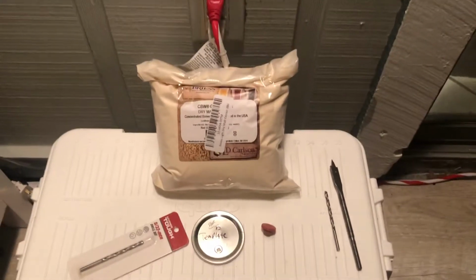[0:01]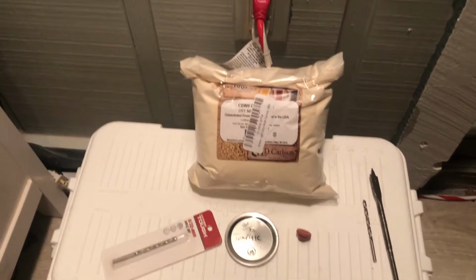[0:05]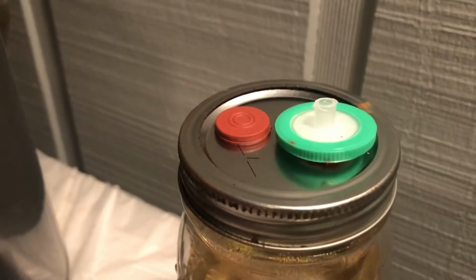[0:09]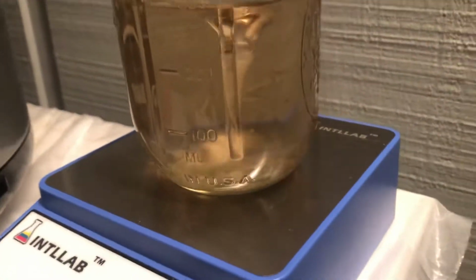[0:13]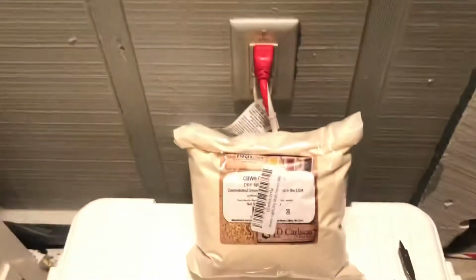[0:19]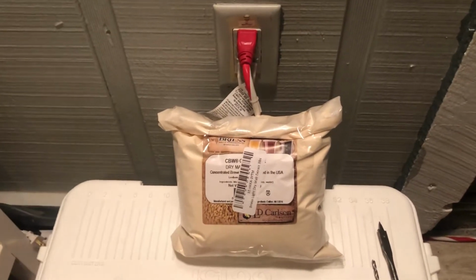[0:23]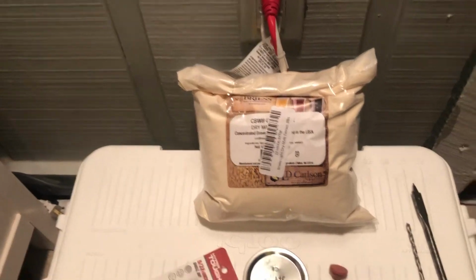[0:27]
How's everybody doing today? Just want to talk a little bit about how to make the lids for these jars, and then also what I use for my solution, so that I can grow some mycelium in it. I'm going to expand my cultures, so I don't have to keep paying the big bucks. Granted, I'm still going to, because I want more and more different types of cultures, but I'm taking this up as part of my hobby because I really enjoy this part.
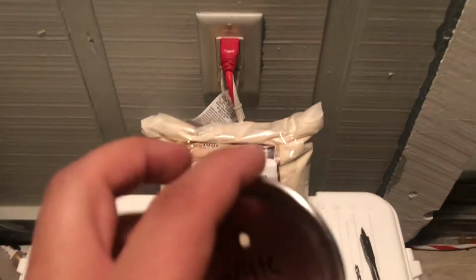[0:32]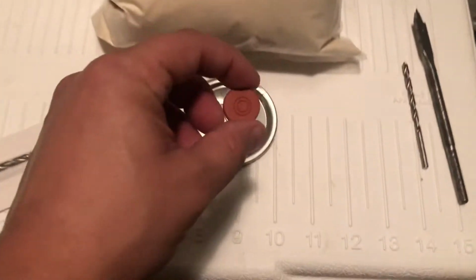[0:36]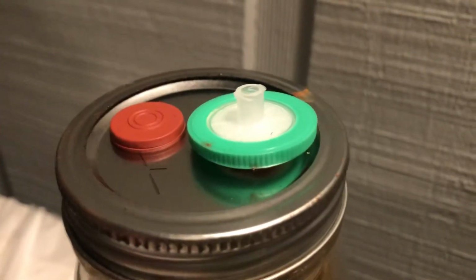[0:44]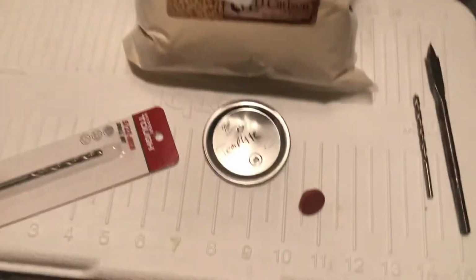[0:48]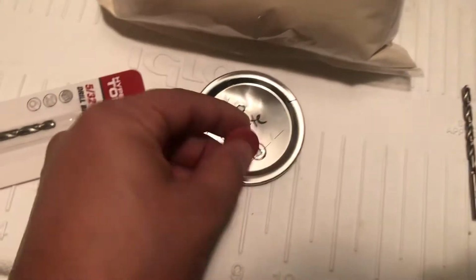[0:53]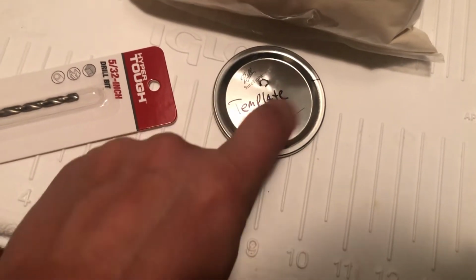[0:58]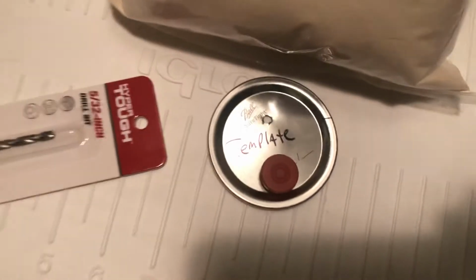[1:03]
So first of all, take a regular lid. You got to line up your injection port to where you want to have it, and your syringe filter, which I don't have any more left because I just made 24 jars. So you just have to place them to where you think they're gonna fit nicely and not overlap each other or overlap the rim of the screw down part of the jar, so that it makes a nice tight seal.
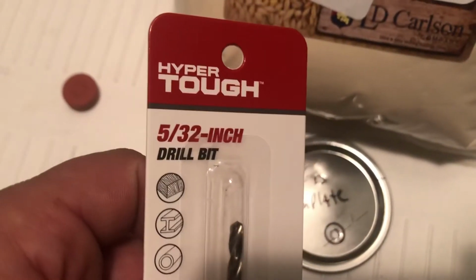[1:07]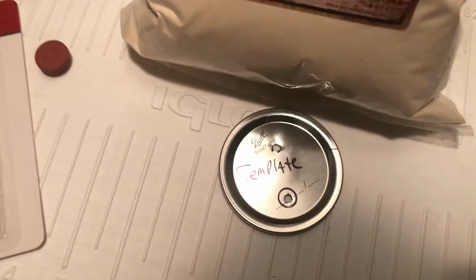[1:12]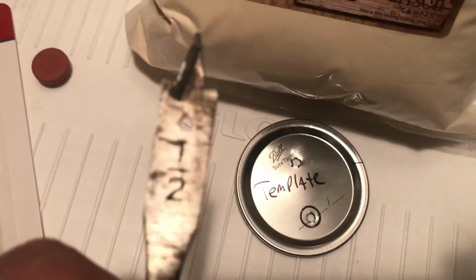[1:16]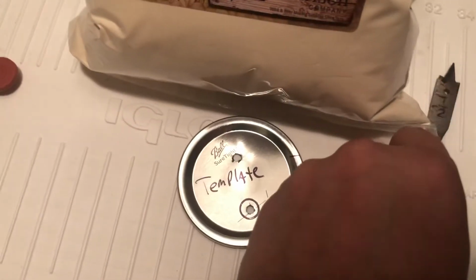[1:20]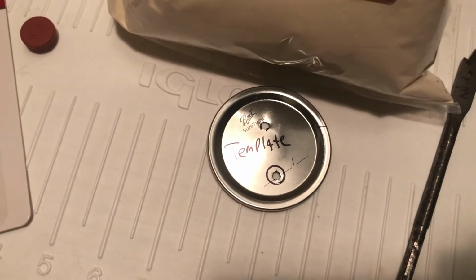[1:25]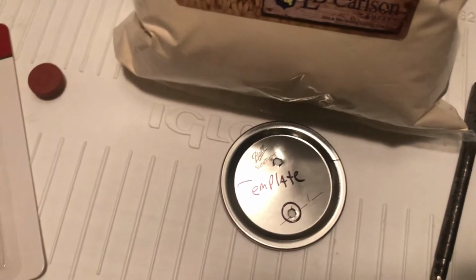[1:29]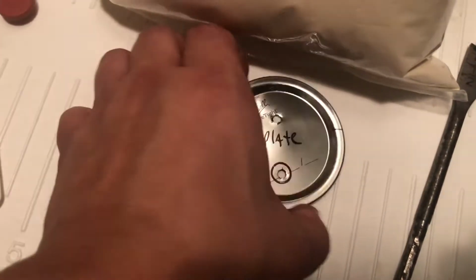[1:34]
So anyways, I used a 5/32 drill bit, which was suggested by the forum, and then I actually changed it up. I used a 1/2 inch wood bit to make my circle, and it turned out awesome. Like no major burrs or anything, so it just cut through it like a mill, which was really good. So once I did that, I deburred both holes. This one is just my template, so I don't have to do it again.
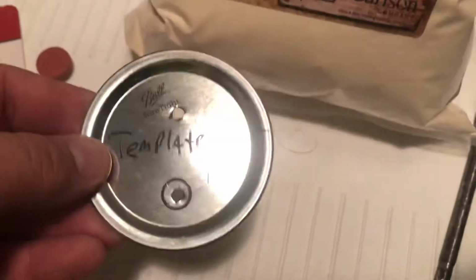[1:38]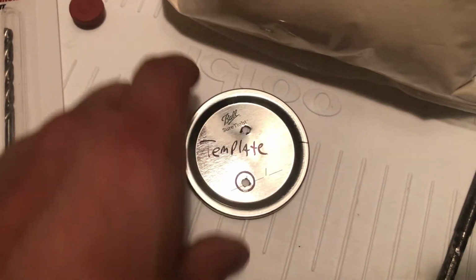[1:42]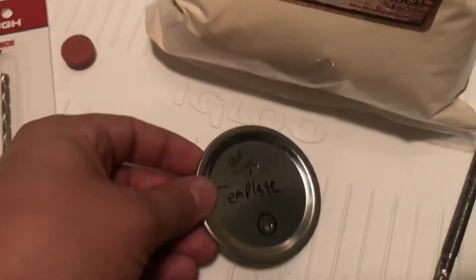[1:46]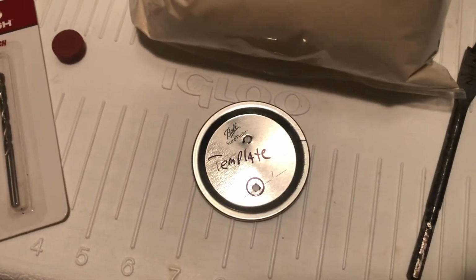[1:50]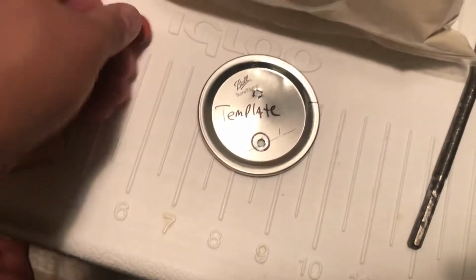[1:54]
So I just set this down on top. I know which one's the big circle, I circled it, and which one's a small circle, so it'll be easy to punch through and just make a dozen more. And I think it took me like a half hour to make a dozen. So yeah, and then fit this into your big hole, and then I put silicone around
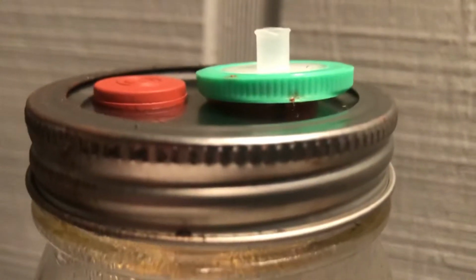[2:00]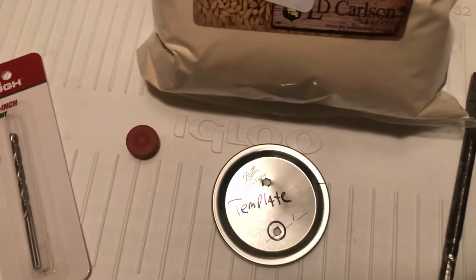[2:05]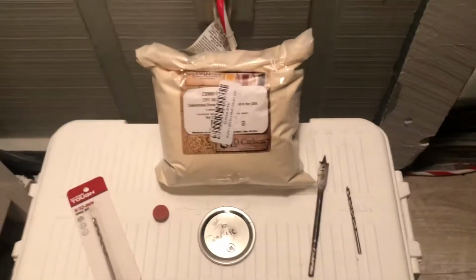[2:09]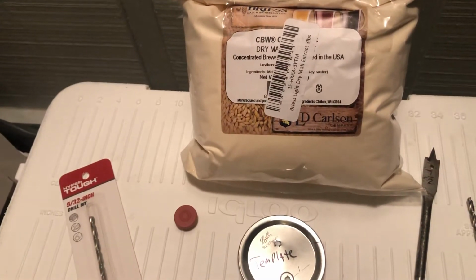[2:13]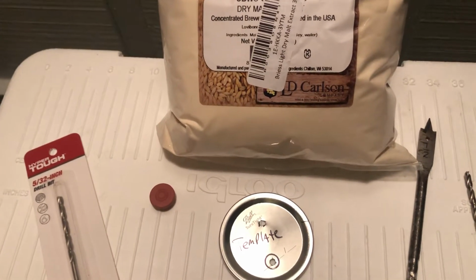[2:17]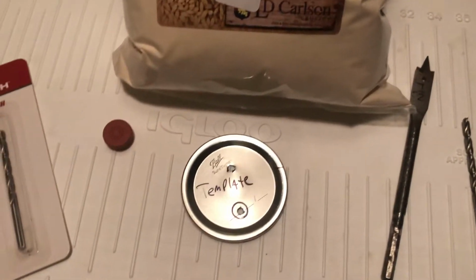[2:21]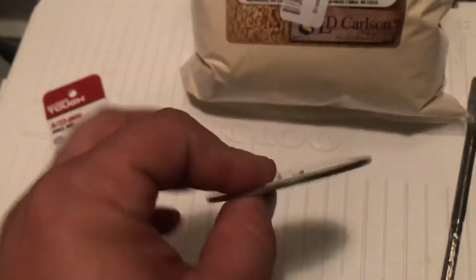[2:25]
the undercarriage of the filter right there, because it's a tight fit, but it's plastic and it doesn't form to the hole great. It does go in tight at once, but I don't want it to fall out, so that just helps it stay sealed and stay where it doesn't fall out. So less contamination would be great. So that's how I made the lids. Didn't take very long, didn't cost very much.
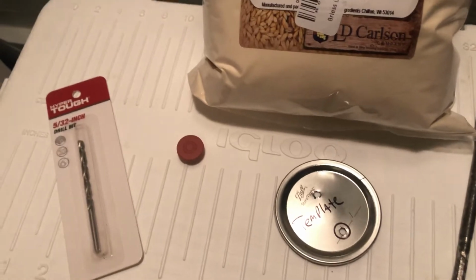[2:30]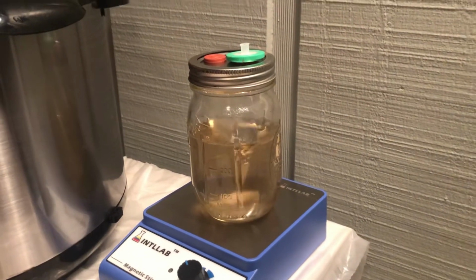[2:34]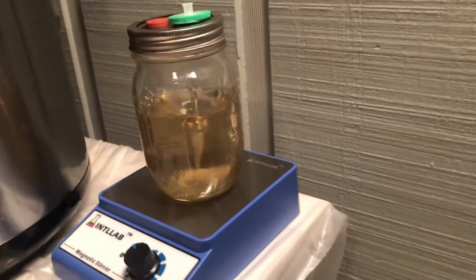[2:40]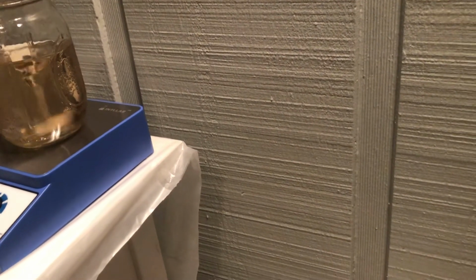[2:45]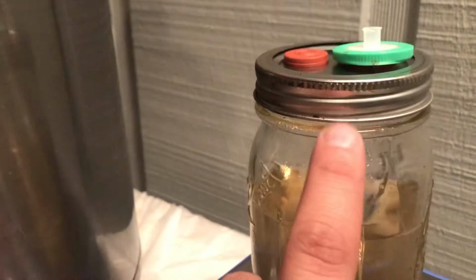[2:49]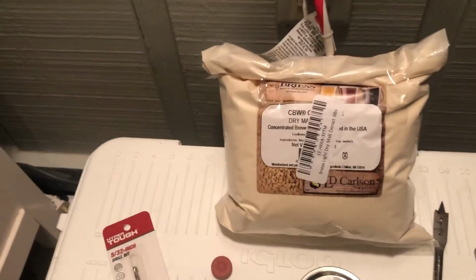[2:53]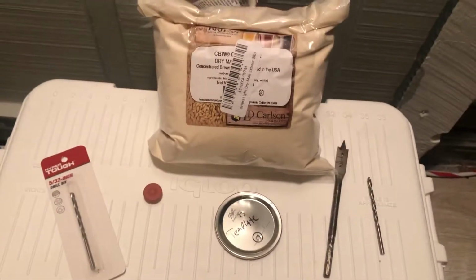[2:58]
You can actually make the lids without having jars, but I actually left the lids on the jars while I was drilling, and all 12 jars I left in the box while I was doing it, so that there was no movement, and I made sure I tightened down the lid so the inner lid didn't spin, which is the inner lid is this part, from the rim. The rim, it would actually spin and try to spin off. And we don't want to damage the seal on the inside right away. So anyway, that's how I made the lids.
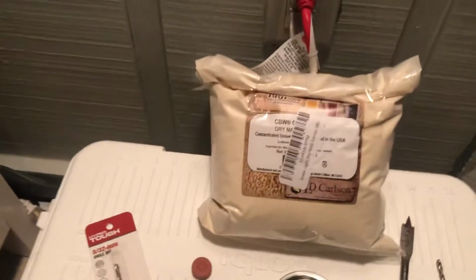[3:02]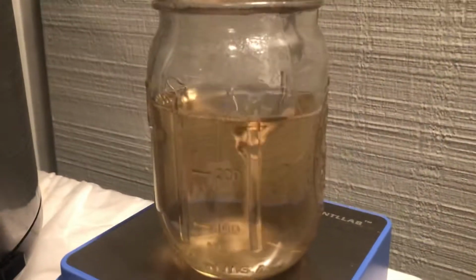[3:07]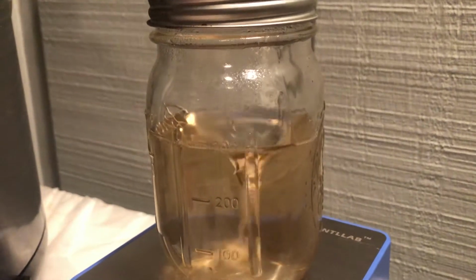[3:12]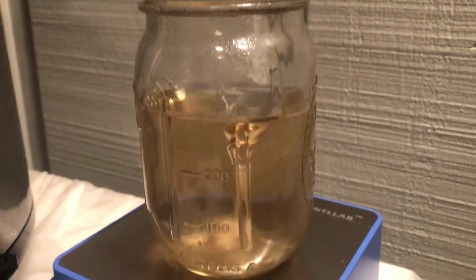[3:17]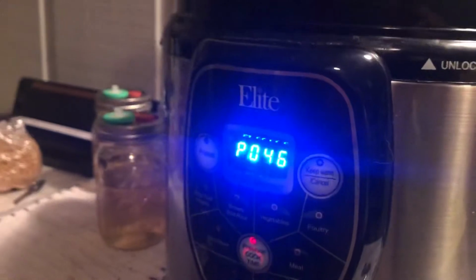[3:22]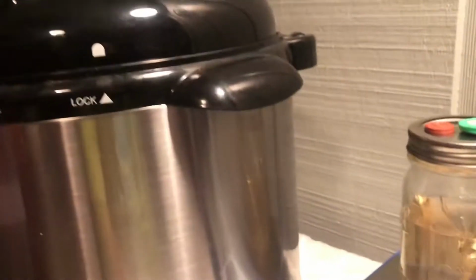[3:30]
Here is how I made the liquid. So as you can see, I got a nice little color. This one's already been pressurized 90 minutes at like 12 to 15 psi, but then I think it's sat at pressure for at least an hour more, with the system going off. So this one right here, I'm currently using the Lite pressurizer. Seems to do okay, but we'll see. We're trying everything out, so I'm also probably giving out some free syringes when I'm done here.
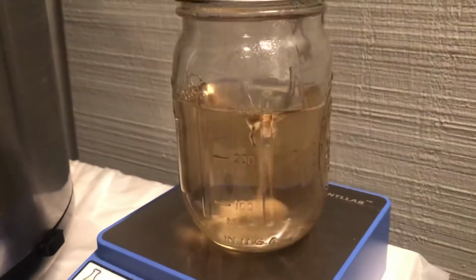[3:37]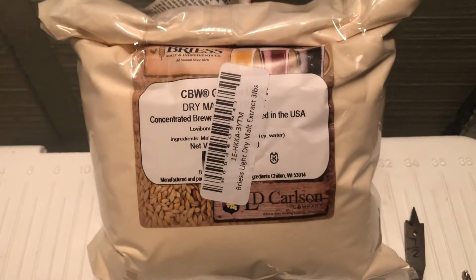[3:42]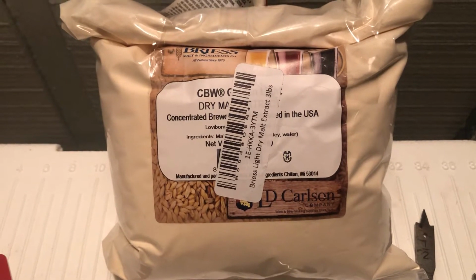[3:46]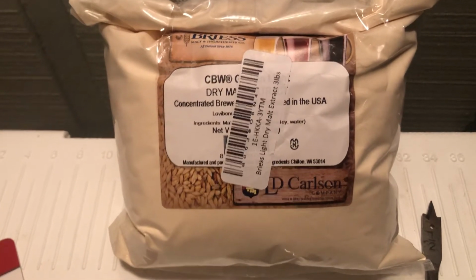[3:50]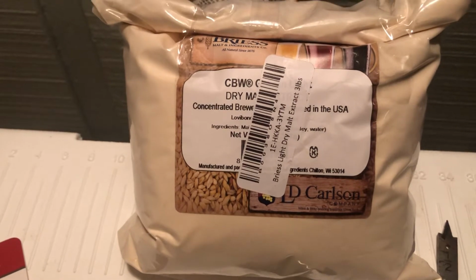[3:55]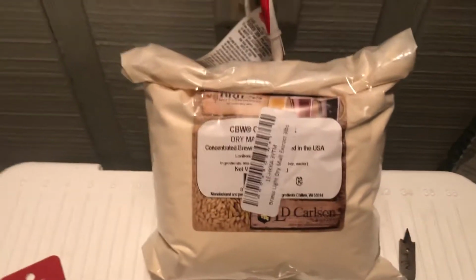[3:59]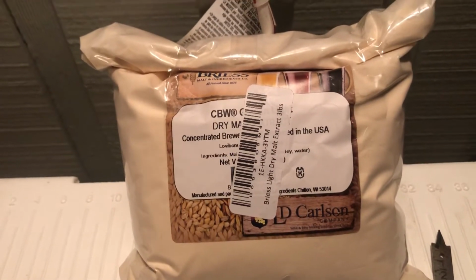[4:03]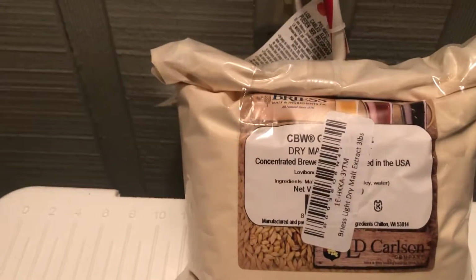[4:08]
Anyways, I did 1 gram of light dry malt extract. So this is what I'm using. This is what I have. It wasn't very expensive. I think it was maybe 15 bucks on Amazon for 4 pounds, 3 pounds. And it will last you forever because you barely use any of it. You use 1 gram of it for 600 milliliters. So I only filled my jars up to 300 milliliters.
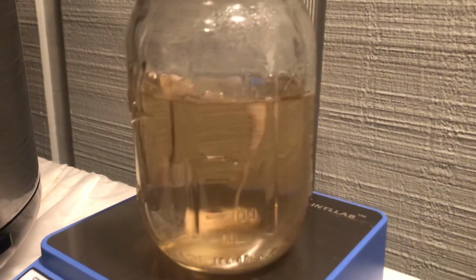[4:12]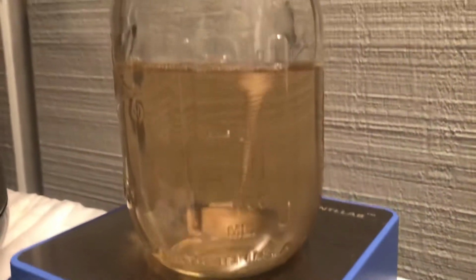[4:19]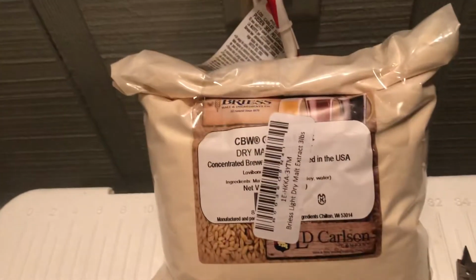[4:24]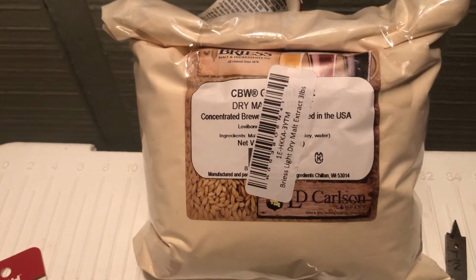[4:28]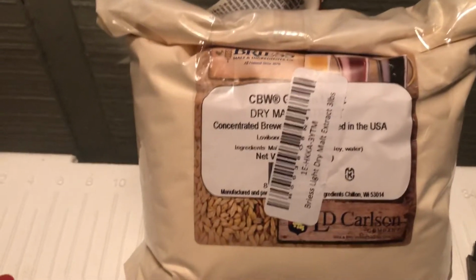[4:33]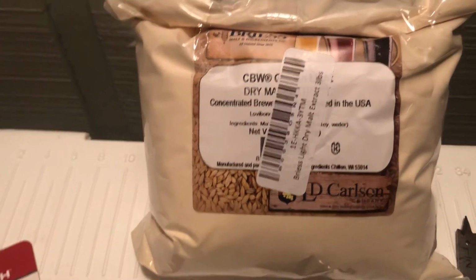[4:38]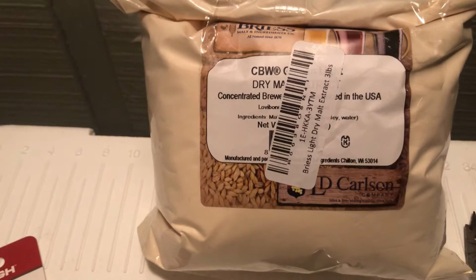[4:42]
I thought I was going to lose a bunch of moisture or a bunch of water while putting it in the pressure cooker, and I don't. So there is barely any loss of moisture. What else? So what I did was I made a big batch. 1 gram is equivalent to almost a quarter of a teaspoon. So I made a triple batch, so 3 halves, and I measured out the milliliters and that many milliliters.
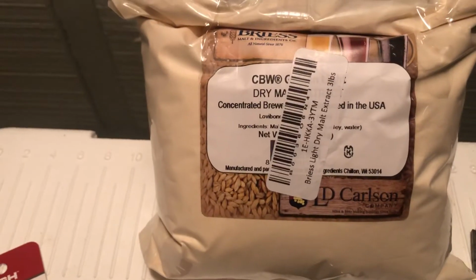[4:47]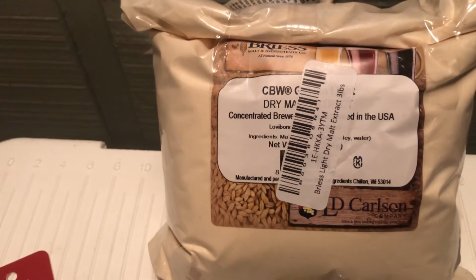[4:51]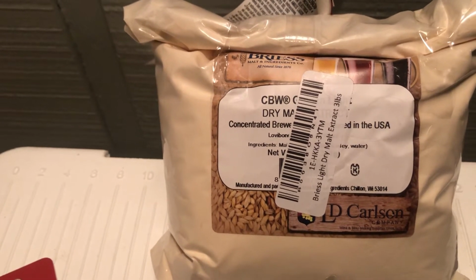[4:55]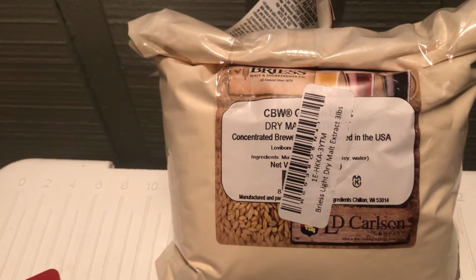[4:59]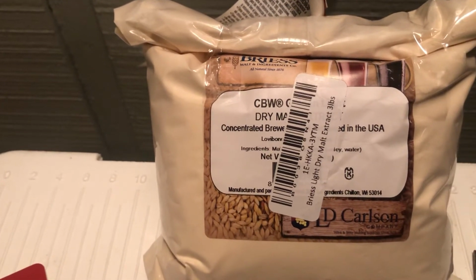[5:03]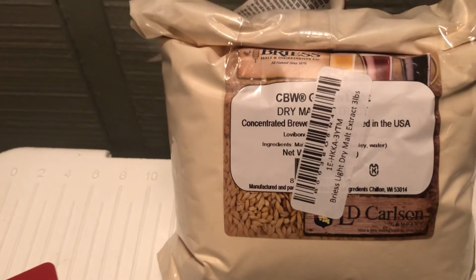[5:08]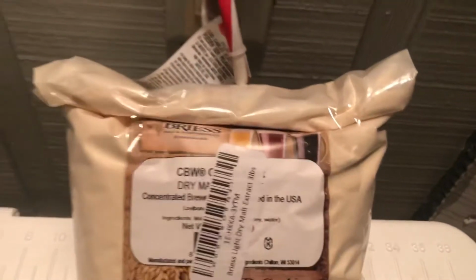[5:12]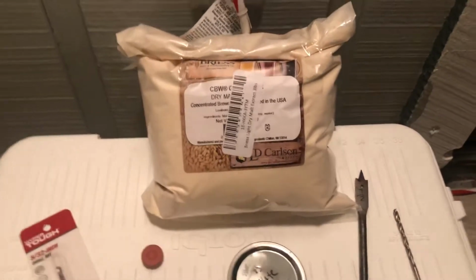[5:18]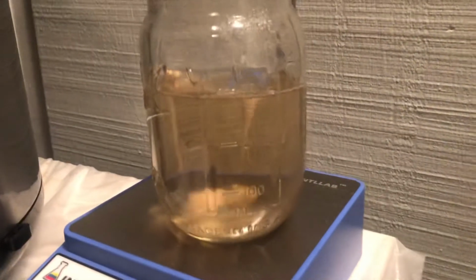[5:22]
So it was 3,600 milliliters. So I did 3,600 milliliters to what was it? Pretty much 1 and 1.5 teaspoons, I believe. Either way, I didn't do it all at once. I think I did it 1,200 milliliters at a time. So I didn't lose track, because it's easy to lose track when you're throwing powder into a bucket and then mixing it up with water. I used warm water, so they come out starting off clear, which I'll show you as soon as I get these out.
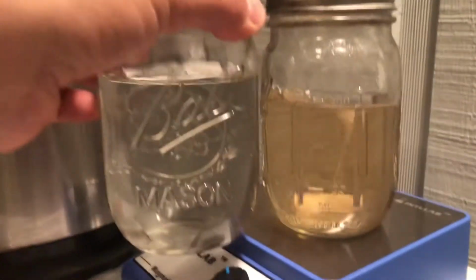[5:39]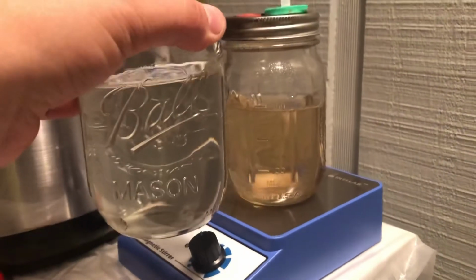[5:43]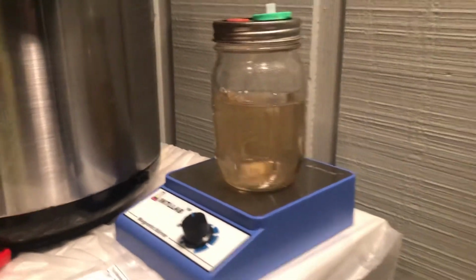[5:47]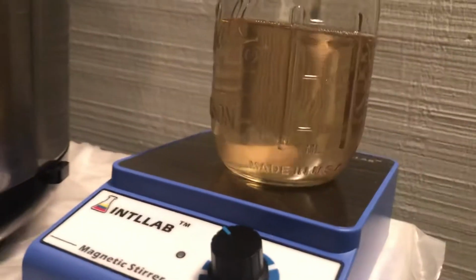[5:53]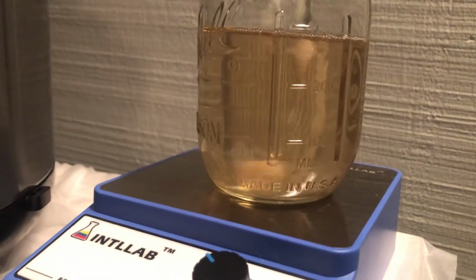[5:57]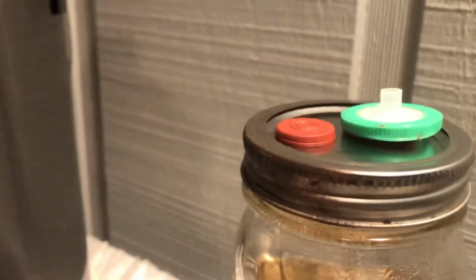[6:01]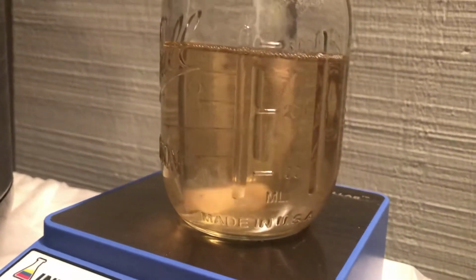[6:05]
So these ones are ready to go in the pressure cooker. You can see the color difference. This is the same mixture. There's nothing different other than it's pressurized. So the fact that it came out a different color, I don't know much about malt extract. I'm assuming it has to do with that. So the fact that the malt maybe being activated with the heat or whatnot, I'm not sure. Anyways, so these are airtight, minus the filter, because the filter is supposed to let gas exchange.
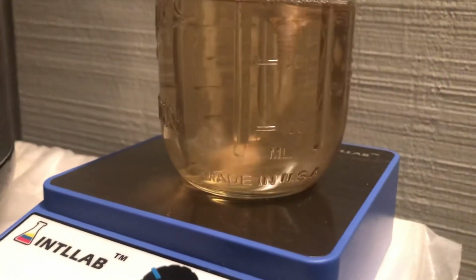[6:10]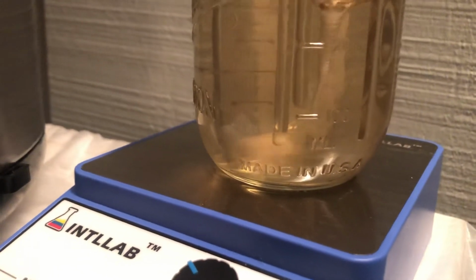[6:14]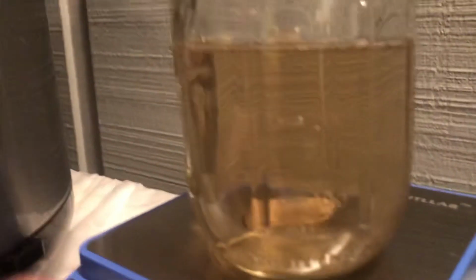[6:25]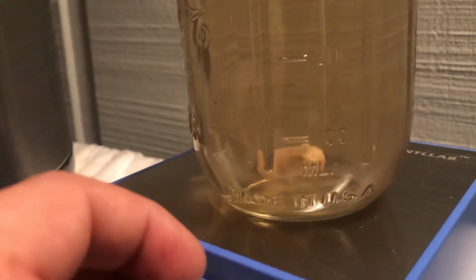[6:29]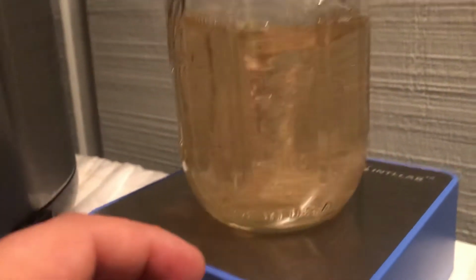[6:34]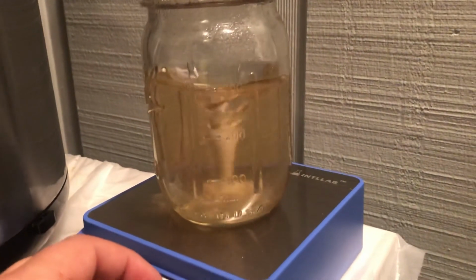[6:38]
I just have this thing turning just to show you. Before I cooked it, I made sure I put in my magnet bar, which I only ordered 24 of those too, so I don't have any extras to show you there, but I can show you this one. That black stuff on it is just the rubbing of the plastic kind of heating up, I guess. So, but that was pressurized with all of this, so it's sterile as well. This stir is pretty sweet. It wasn't very much. It was like $2 or $3 on Amazon.
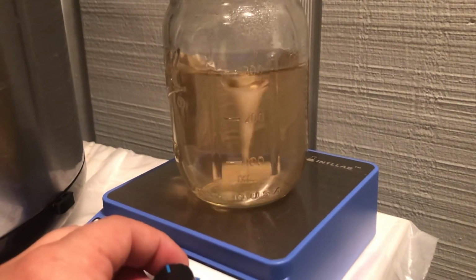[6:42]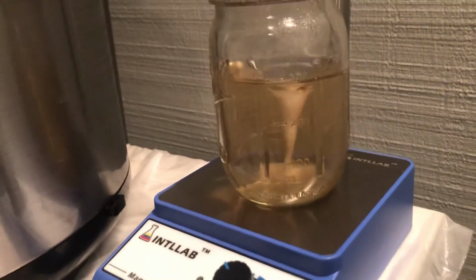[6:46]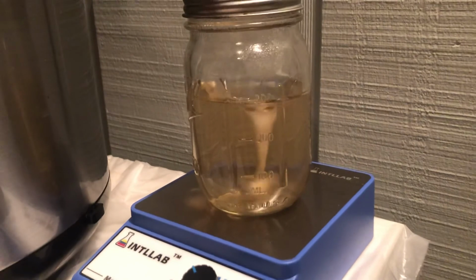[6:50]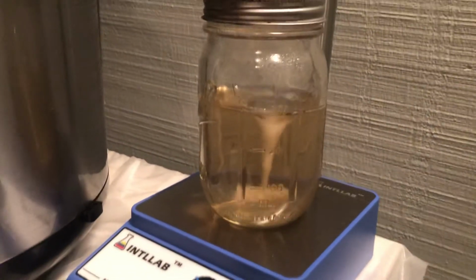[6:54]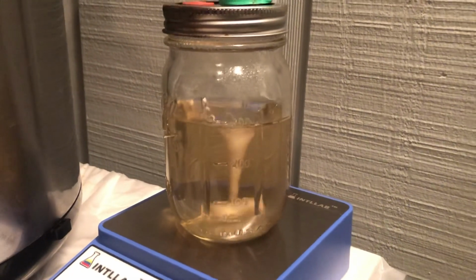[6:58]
So. All right, well that's what I got. This is where I'm at, and this is where I'm going. So hopefully I can expand 5 cultures into 24 300 milliliter cultures, which would be a lot more syringes and a lot more time to play with, instead of having to spend $10 each time.